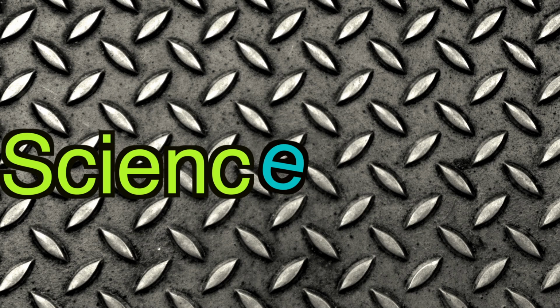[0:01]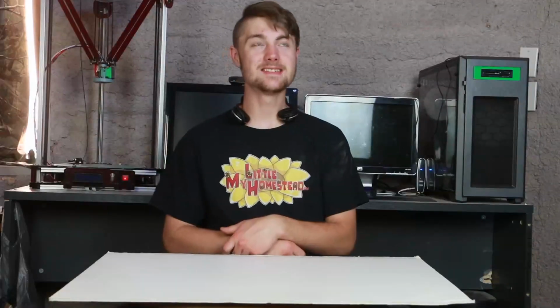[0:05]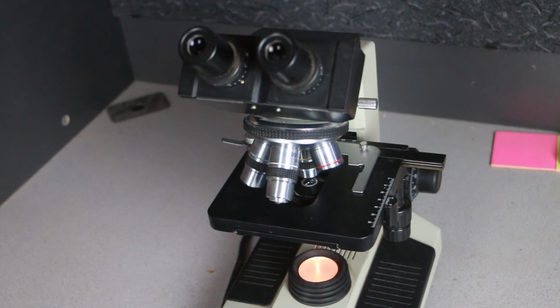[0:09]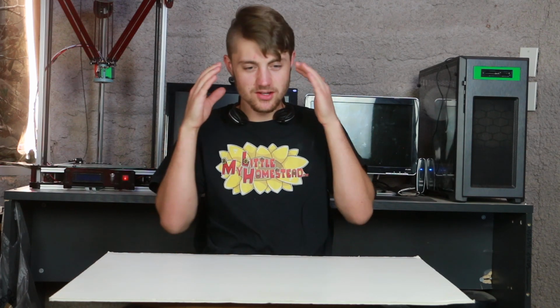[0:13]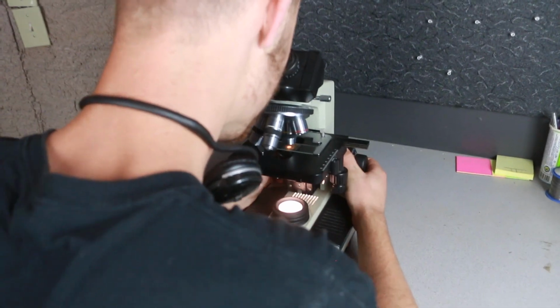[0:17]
So I've had this microscope sitting on my desk for quite some time. And every time I use it, I always feel so crammed. Like you have to look inside the eyepiece and find what you're looking at and then focus on it. There's gotta be a better way.
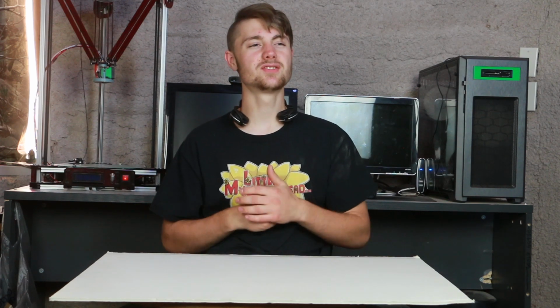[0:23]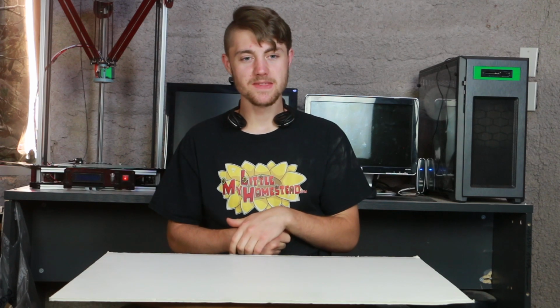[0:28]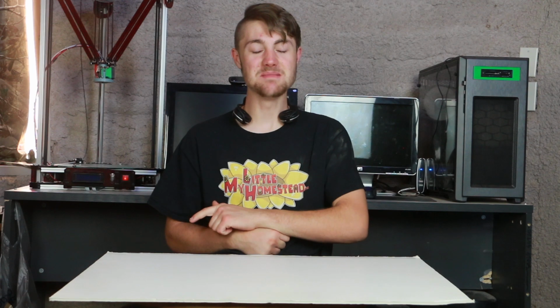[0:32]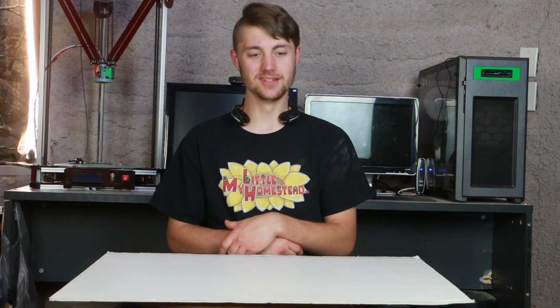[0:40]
And then I started to think of some sort of camera that I could mount on this microscope. And then it dawned on me, I have a cell phone and it has a beautiful camera on it. So today we're gonna be making a cell phone mount so we can display what we're looking at with our iPhone. Let's get started.
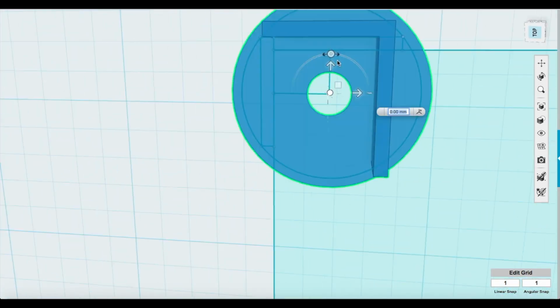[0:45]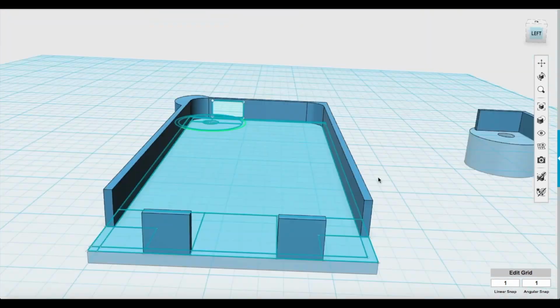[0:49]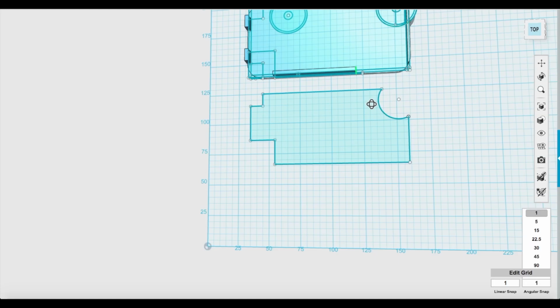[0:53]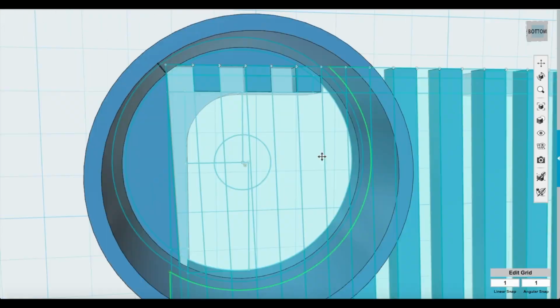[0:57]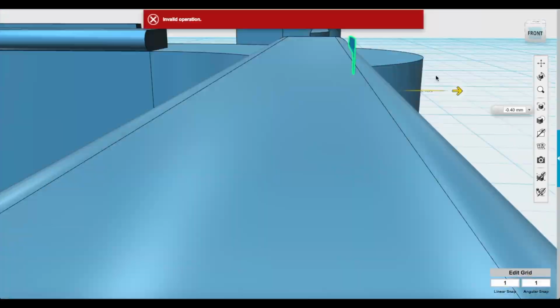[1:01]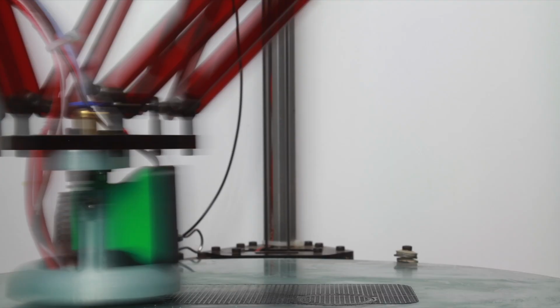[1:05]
I've designed this iPhone mount to fit an iPhone 5S and hopefully produce a very nice image using the camera setting on the iPhone. All right, so it looks like the design is done. So let's go ahead and get 3D printing.
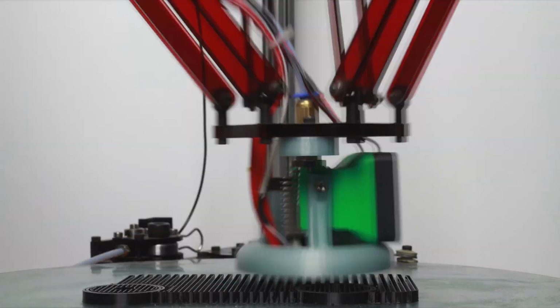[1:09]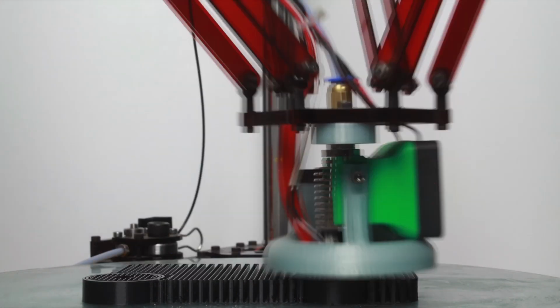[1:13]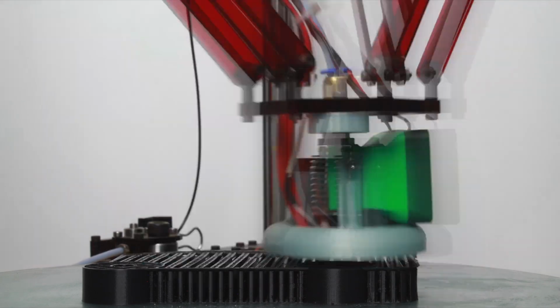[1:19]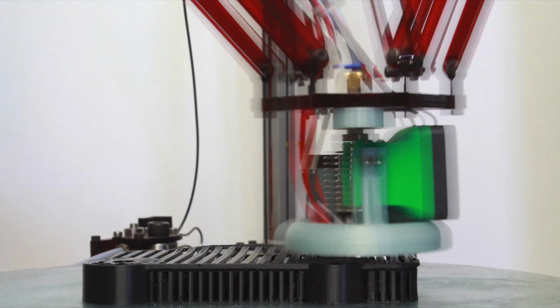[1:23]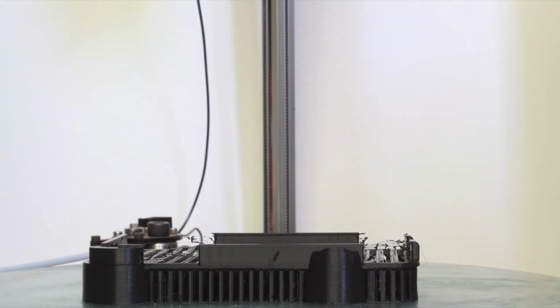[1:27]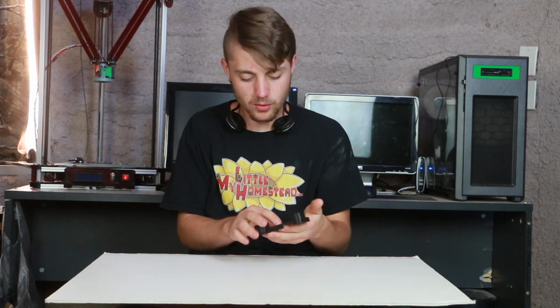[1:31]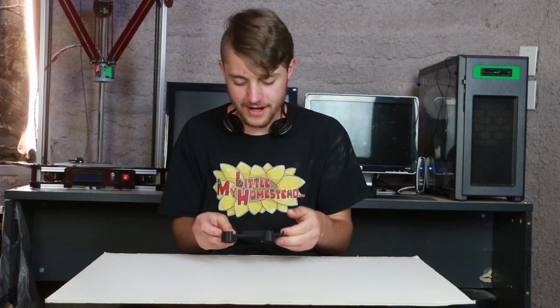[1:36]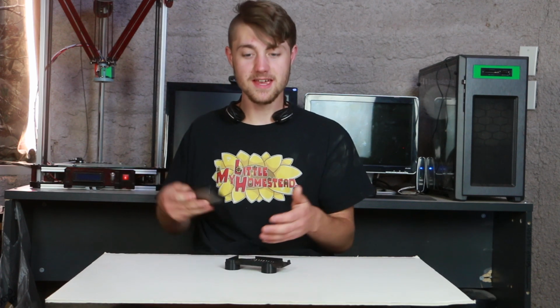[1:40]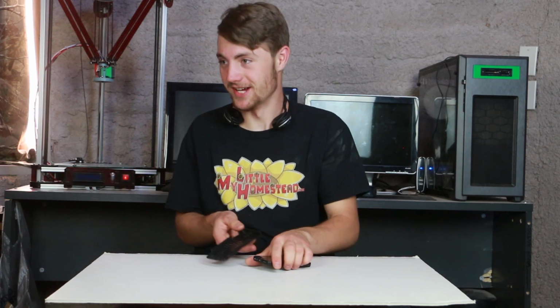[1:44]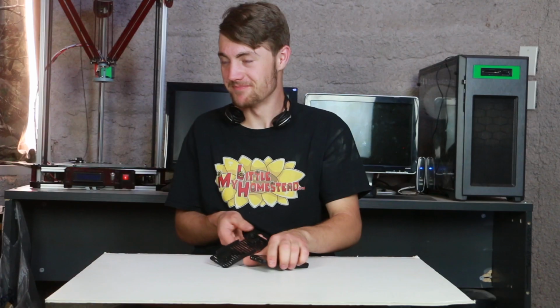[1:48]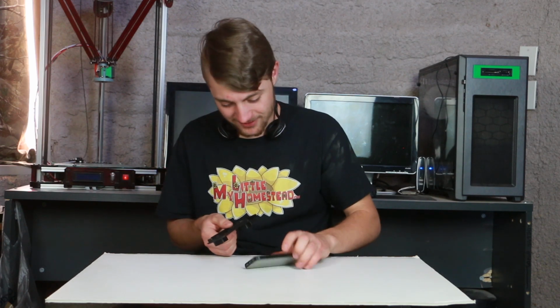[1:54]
All right, so I pulled off the model and I cleaned it up. I was so excited. I got my iPhone out and realized something. I designed it from facing the back of the phone. I designed it mirrored. Now the camera's over here and this hole's supposed to be over there. I didn't realize I did this until after I printed the model. Yeah, we got to fix that issue.
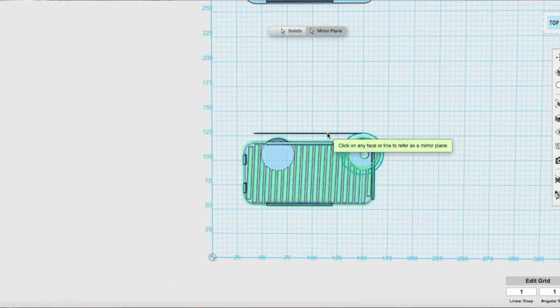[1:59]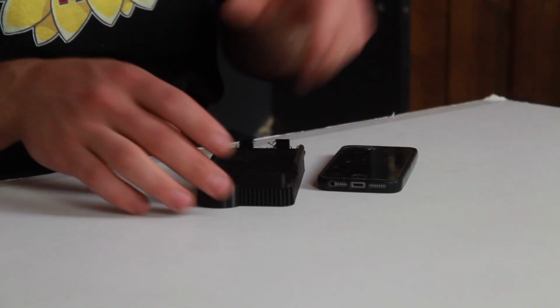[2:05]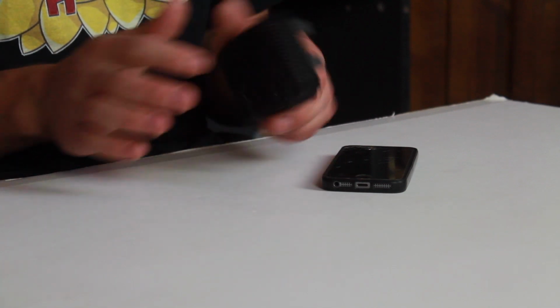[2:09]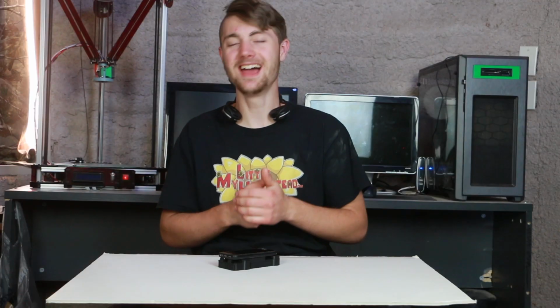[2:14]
So I mirrored the model so that it would be the correct way and reprinted it. And now we have the correct model. And this one I still haven't cleaned up yet. I haven't cleaned the support off the bottom yet. And you can see now the camera will work. All right, so I'm gonna go ahead and clean up this model.
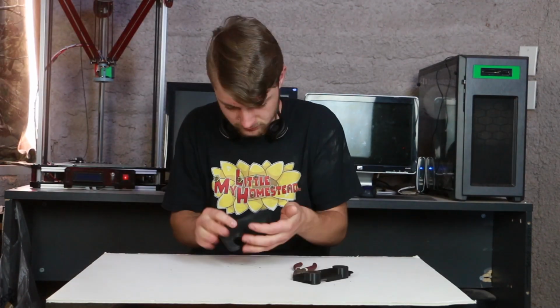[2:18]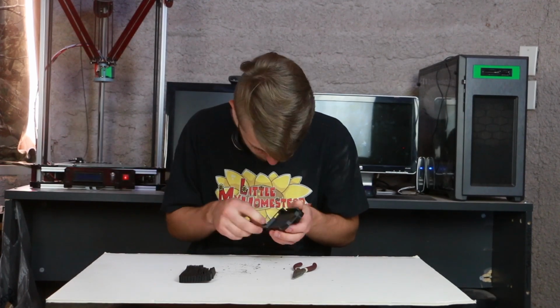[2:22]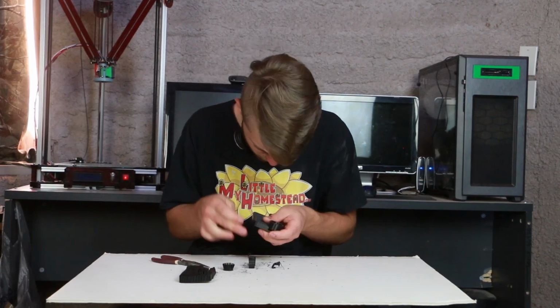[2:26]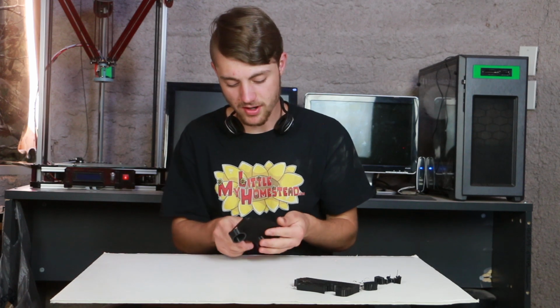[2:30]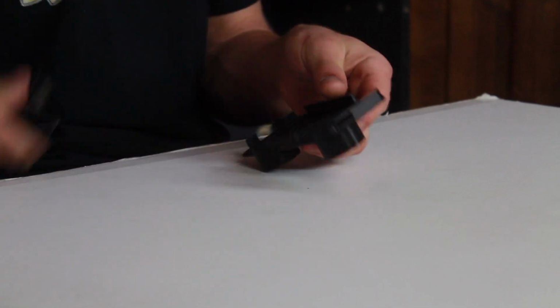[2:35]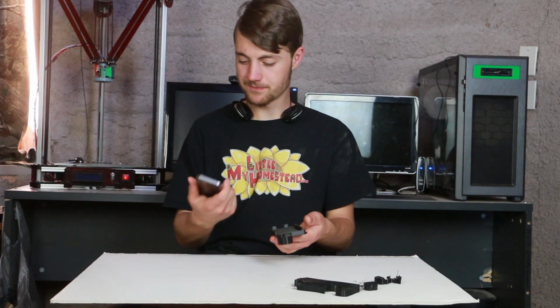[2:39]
All right, I got the part cleaned up. Looking nice, everything looks good. So now all I gotta do is just test my iPhone. All right, so here's my iPhone. Let's go ahead and test it.
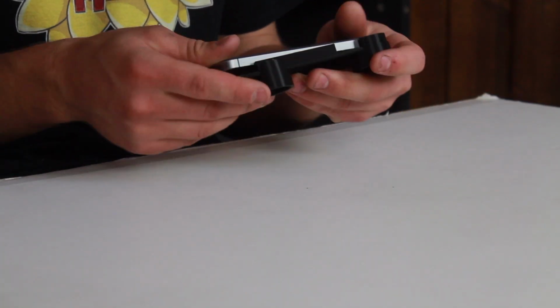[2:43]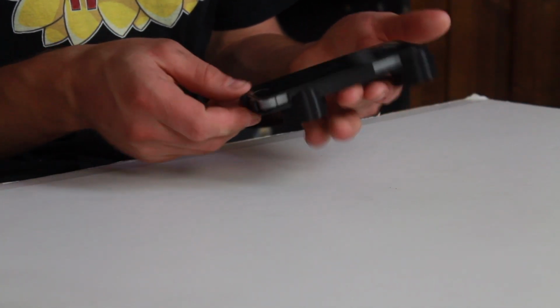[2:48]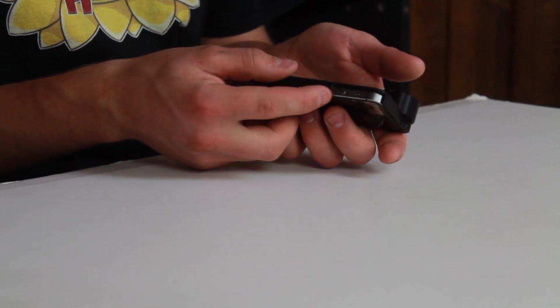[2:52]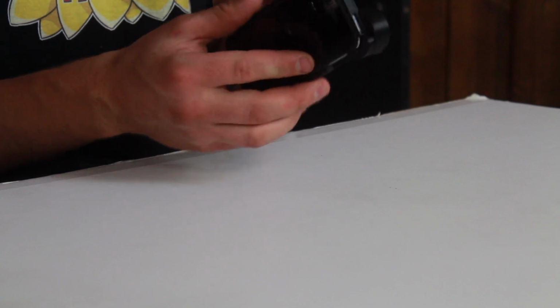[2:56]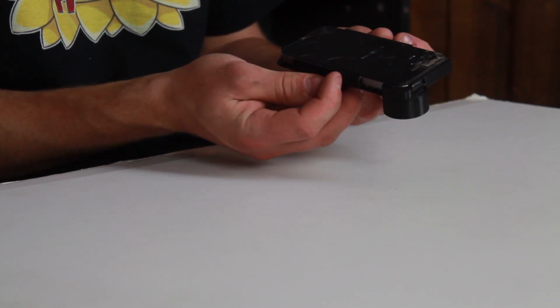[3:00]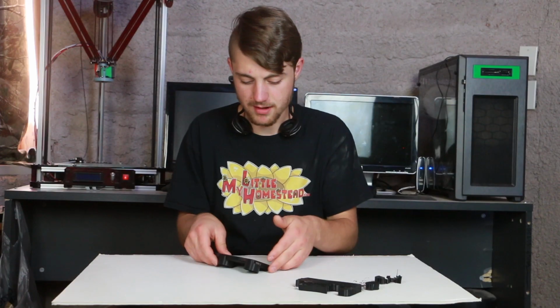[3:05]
Well, the phone fits absolutely beautiful in there. I did notice one little thing. It does cover up one of the sound buttons on the side. No big deal for me. I think though I will redesign the model on a later date to bring that down so that we don't cover up our button like that, because it is constantly pushing it, so that may become a problem after a while. But let's go ahead and look at the camera.
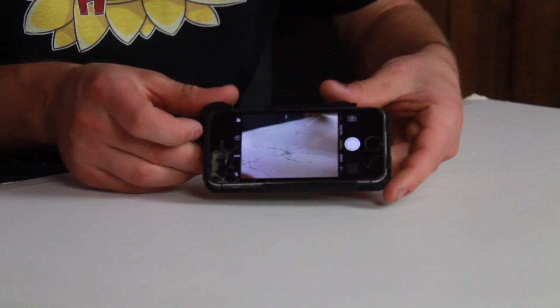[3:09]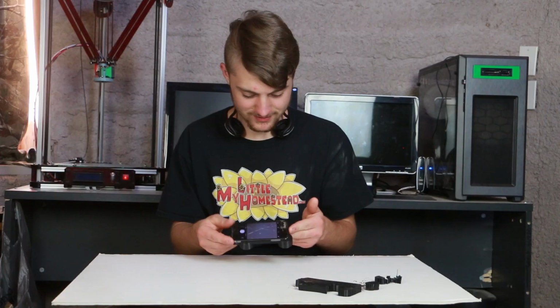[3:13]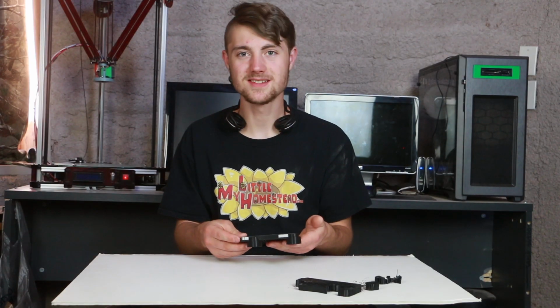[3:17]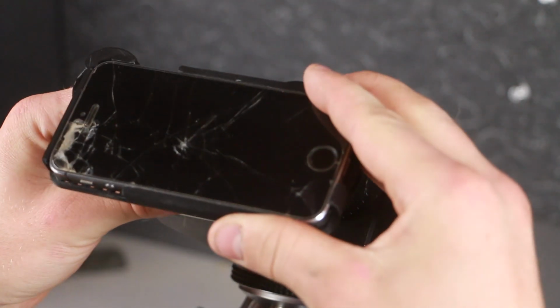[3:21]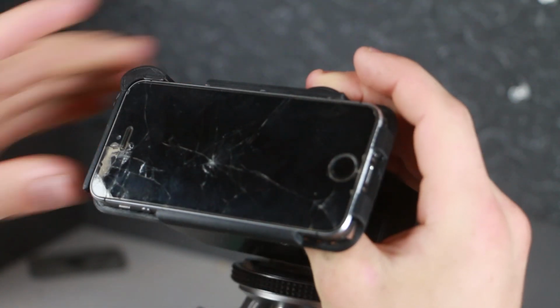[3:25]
We can see that we get a beautiful image there with my fingers. So now we gotta go put on the microscope and see if it works. I'm excited. Let's go do this. So let's go ahead and put it on the telescope. Oh no. Oh no. No!
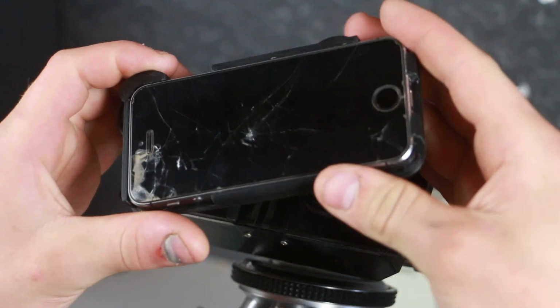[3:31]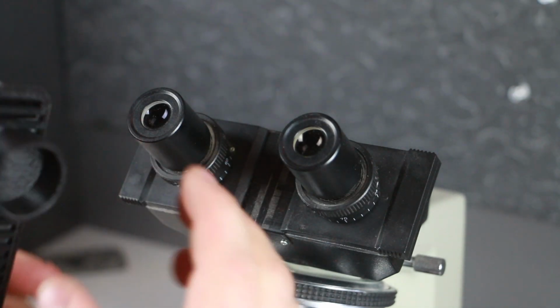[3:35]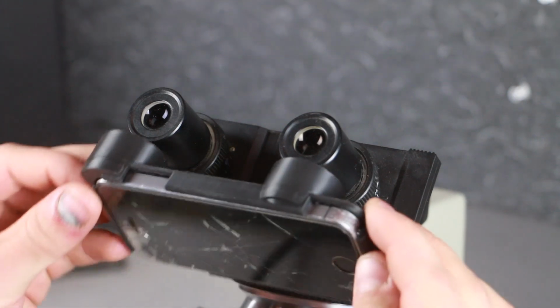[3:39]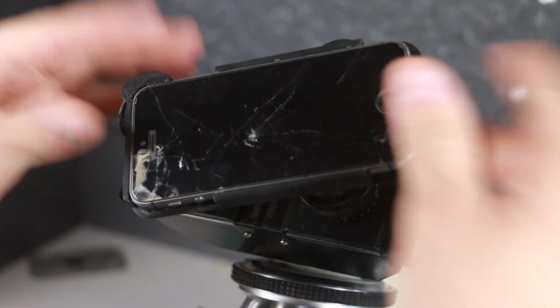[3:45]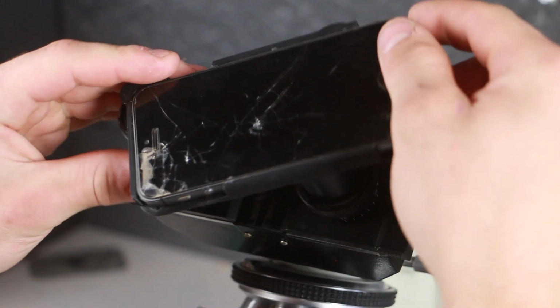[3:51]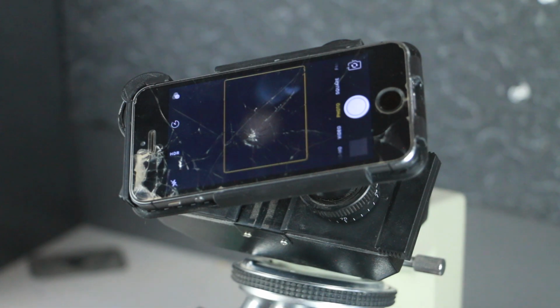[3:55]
I designed it again and it messed up. It's because this section here, it's too big. Sometimes you get designing these things and sometimes they just don't work. Oh my gosh. But this one I think I could, because I can just put it on one lens and just set it down like that. Yeah, so I definitely need to make a couple modifications to this, but for now we'll just put this one side on and just lean it over like that, which we obviously don't see anything yet.
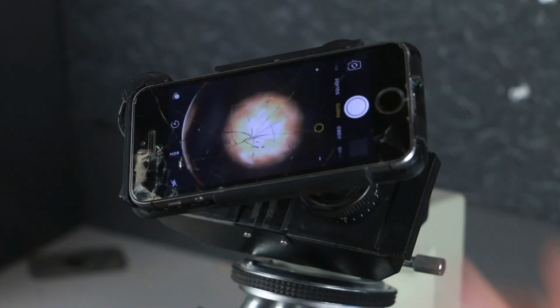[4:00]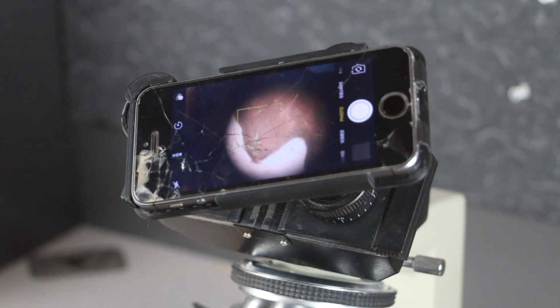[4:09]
We'll go ahead and turn on the microscope. There we go, we'll zoom that in so that we get a nice image there. Let's go ahead and focus in. All right, there we are. I believe that's working. Wow, that is extremely nice.
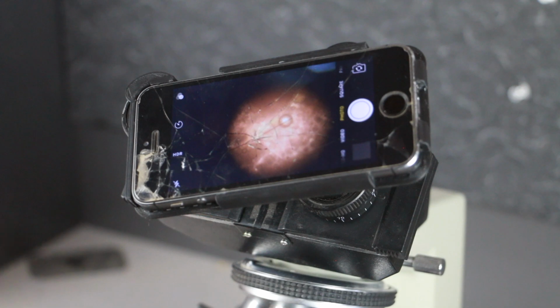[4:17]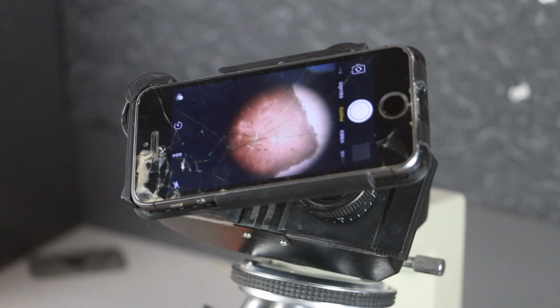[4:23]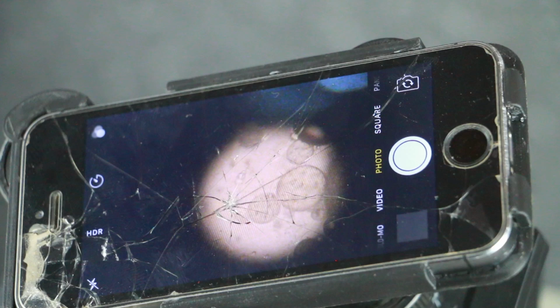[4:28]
Some of you might be curious what exactly we're looking at. And what we're looking at is actually a piece of food. I broke it down and watered it down and put it in here because I thought, hey, I would love to see what this looks like. And you know what I think? I think we need to get a bit closer. Let's go ahead and get closer on this guy.
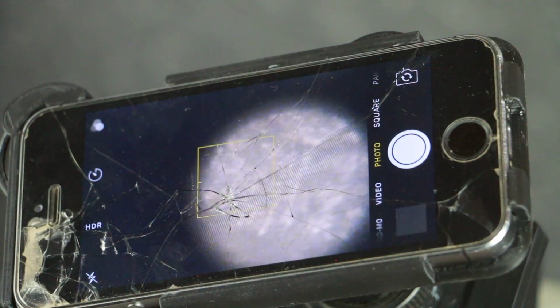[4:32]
Let's see if we can't find a microorganism in here somewhere. Or a germ or something. Intriguing. Look at that, that's very, very cool. Dang, I'm having tons of fun. So I need to definitely add those couple modifications. Other than that, I believe it's working. And now I can enjoy viewing my microscope through a screen.
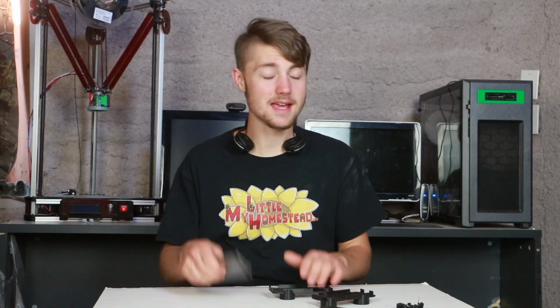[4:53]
All right, I think that this actually concludes this video. Pretty simple 3D design, makes your life a lot easier.